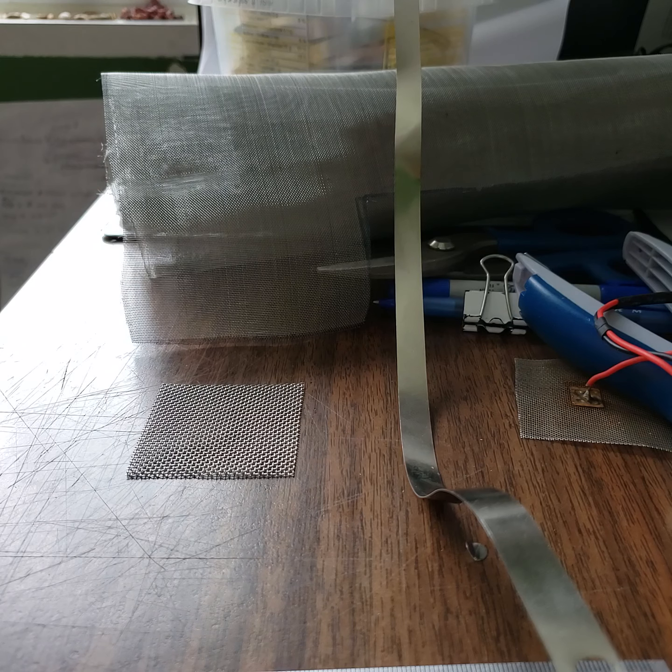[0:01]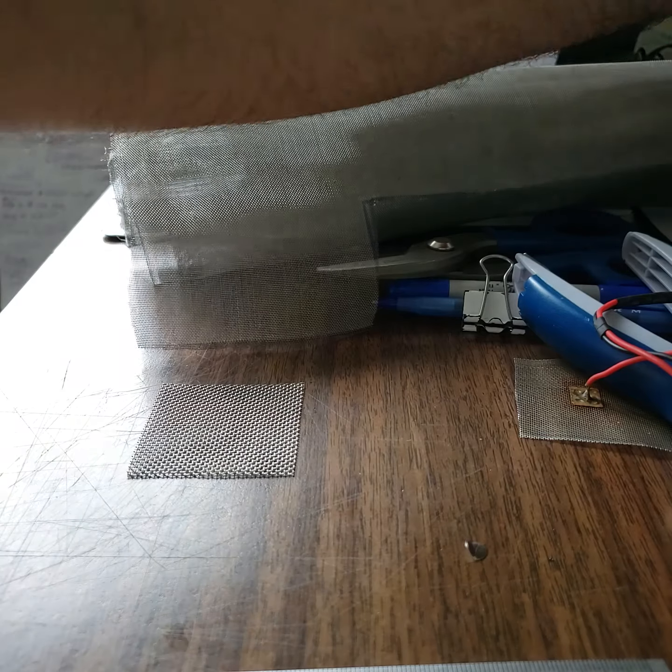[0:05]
Hey guys, today I will go through the steps for constructing electrodes for tDCS devices.
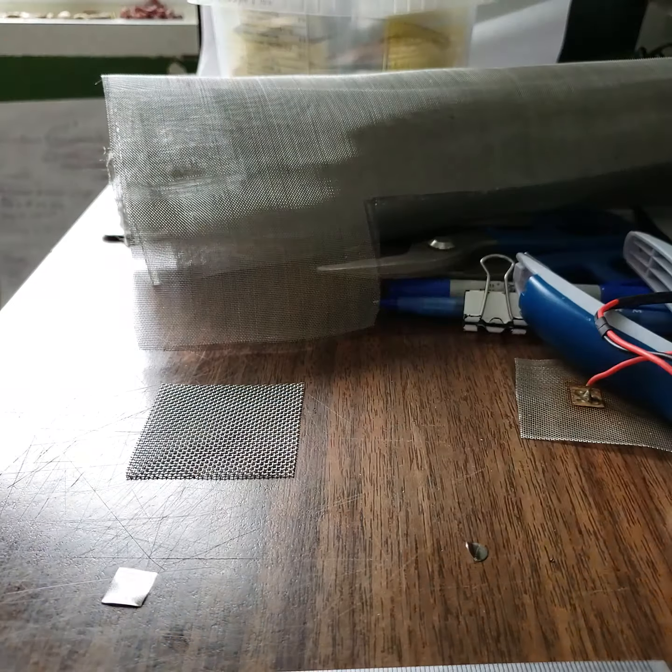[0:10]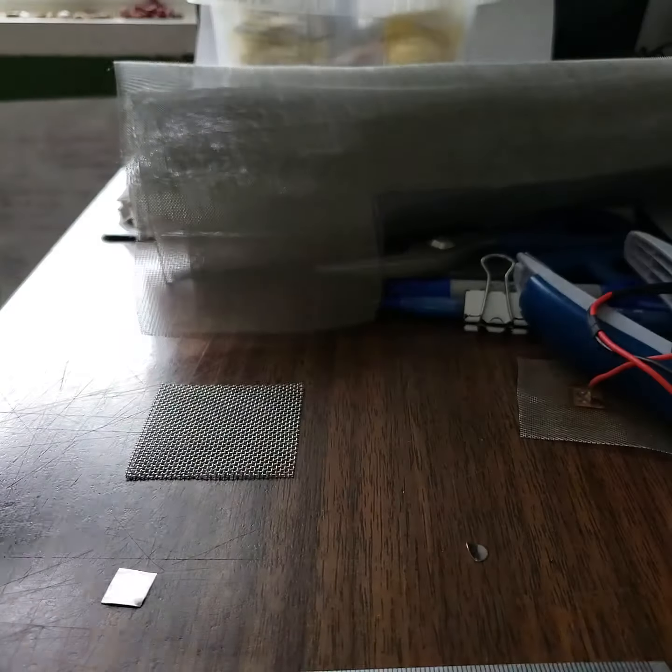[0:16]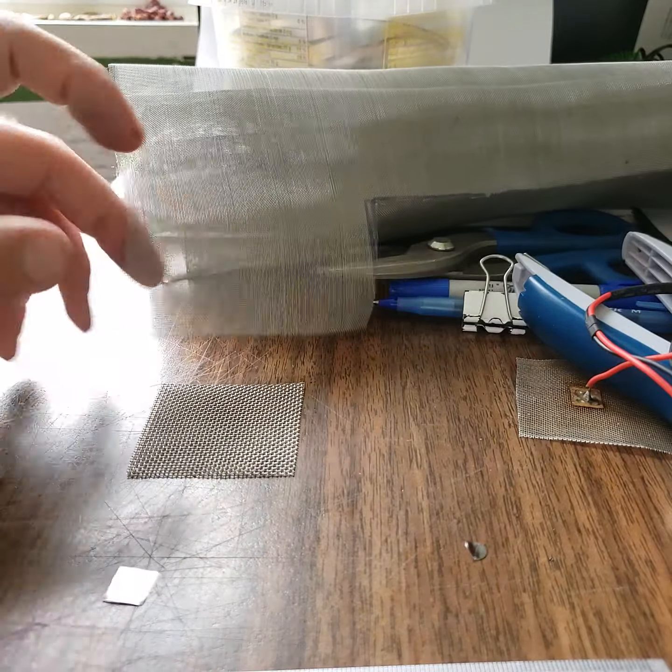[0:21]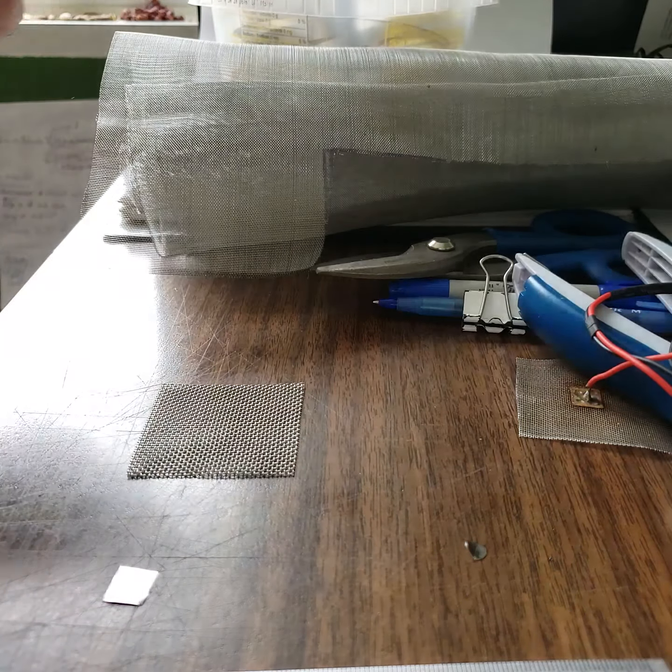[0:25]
So you should buy this sheet. It's the mesh 20. Previously I was buying 40, which is not really solid. It easily takes the form. I don't like it much. This one is more solid. It's 20. The other one is 40.
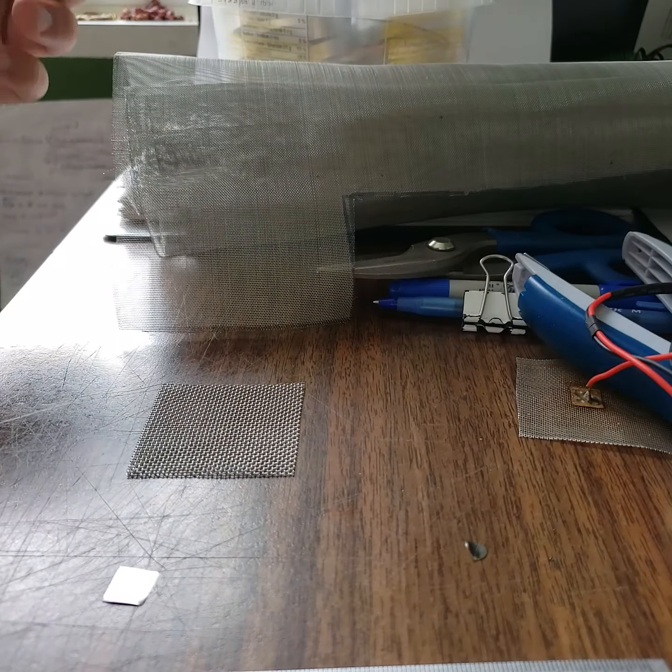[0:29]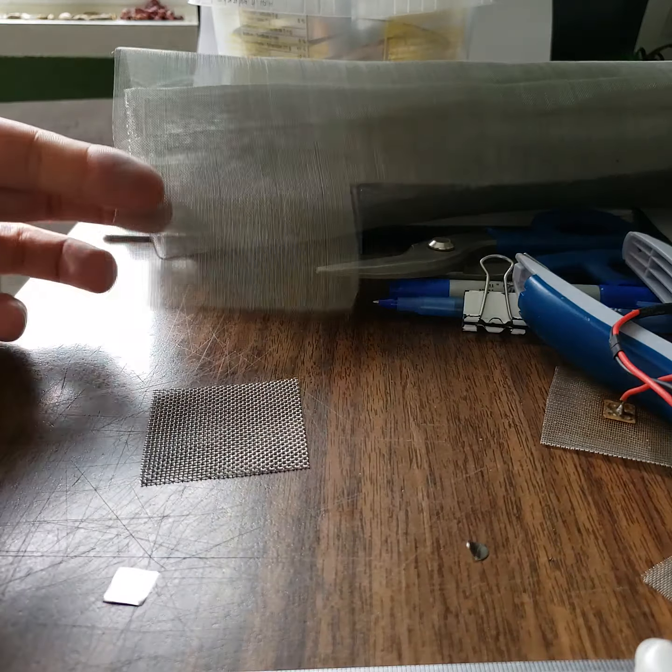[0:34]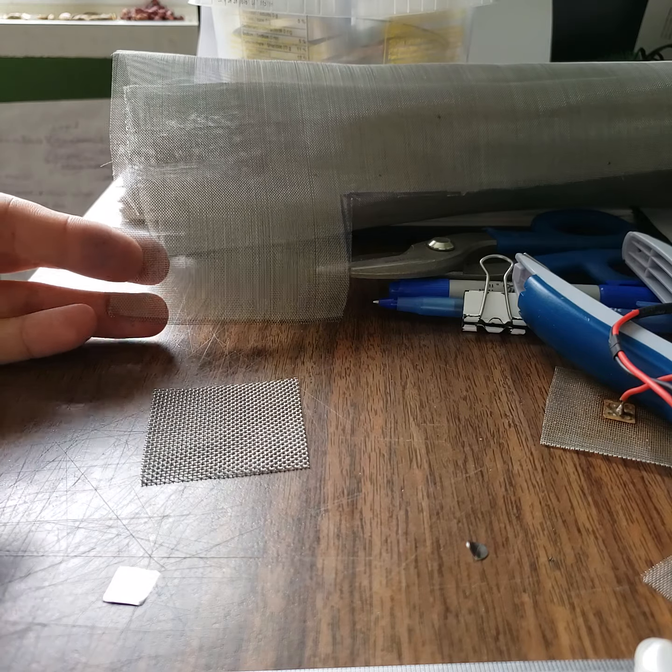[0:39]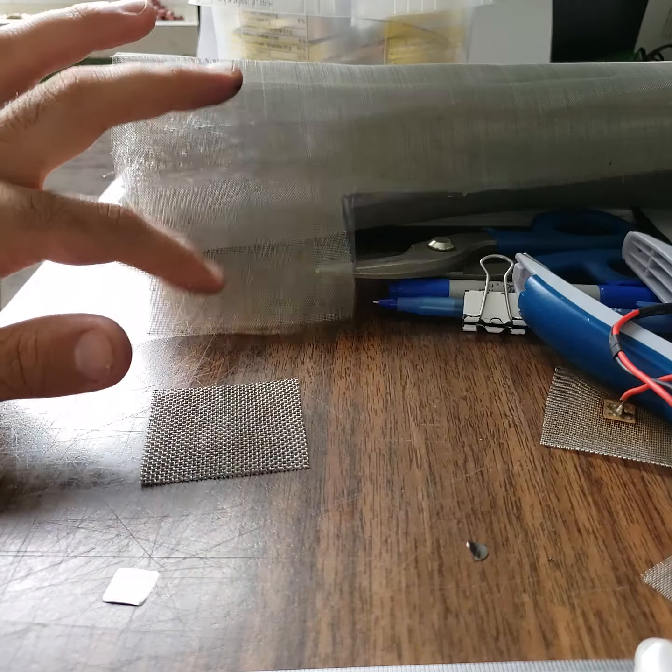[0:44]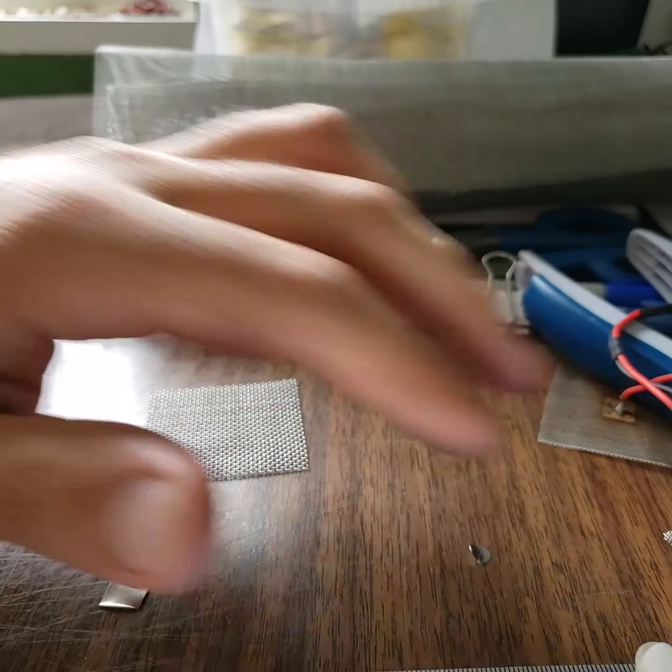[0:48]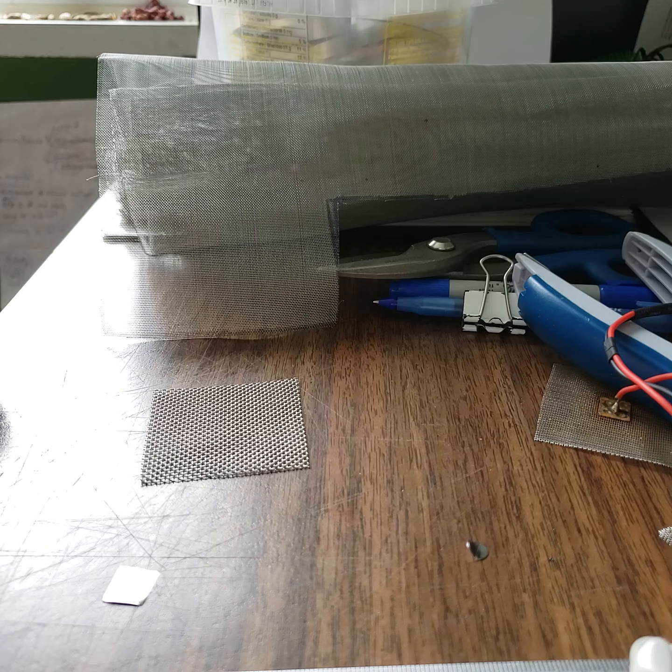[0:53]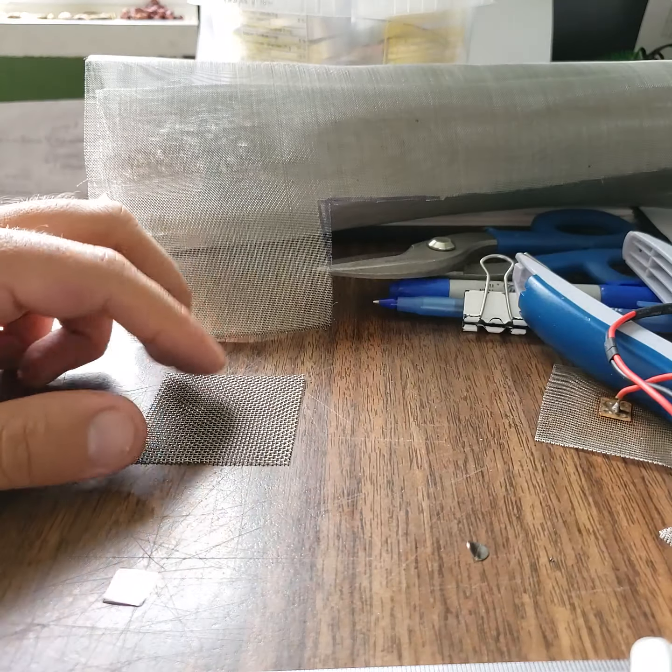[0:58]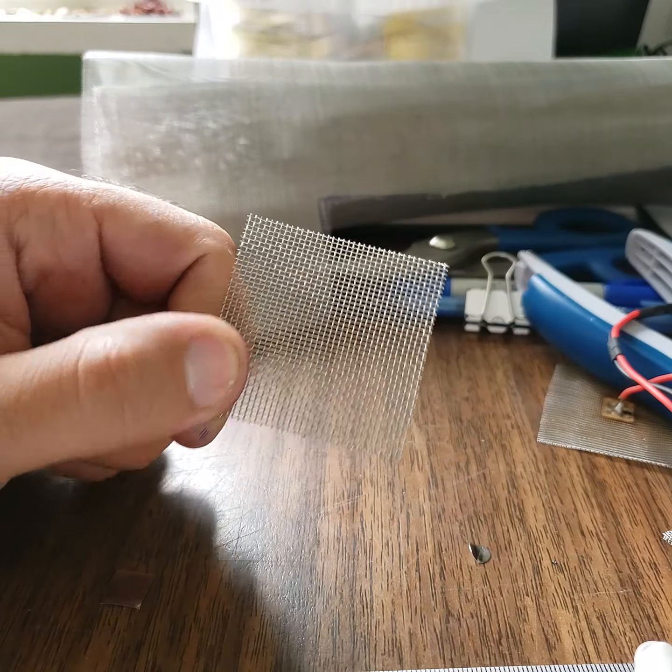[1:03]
The other thing I don't like about mesh 40 is it's not resistant against electric current. After using it for several weeks, the filter starts to melt, and it will lose some of its parts, so it won't pass the electric current evenly through the sponge. So I'm going to try the 20 mesh today.
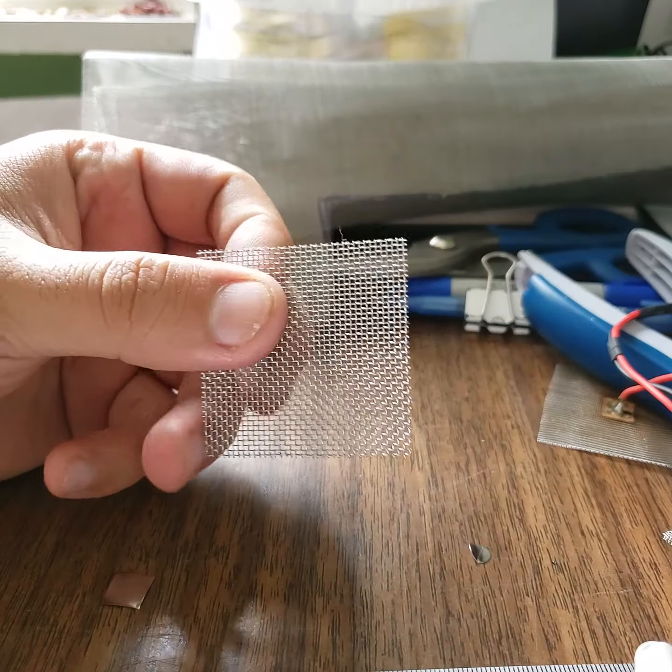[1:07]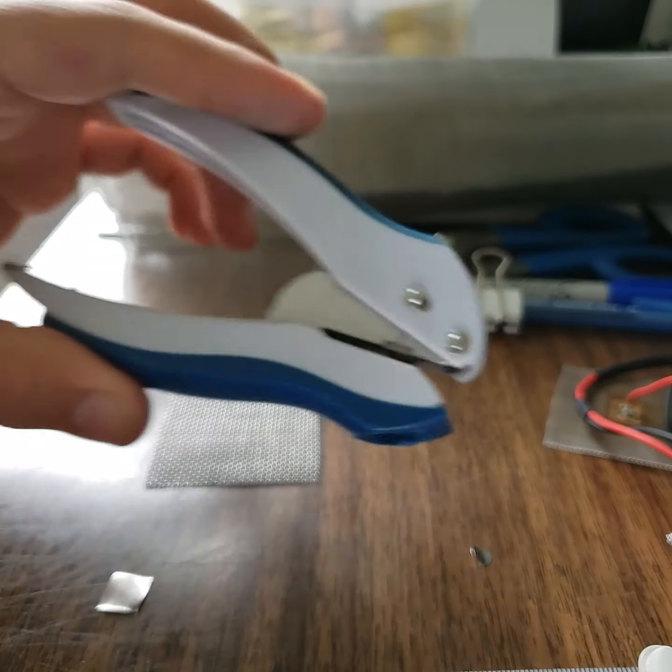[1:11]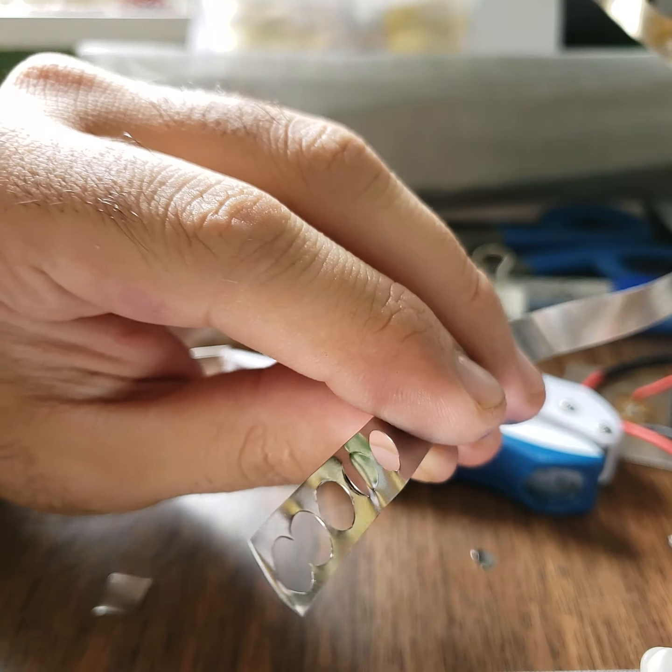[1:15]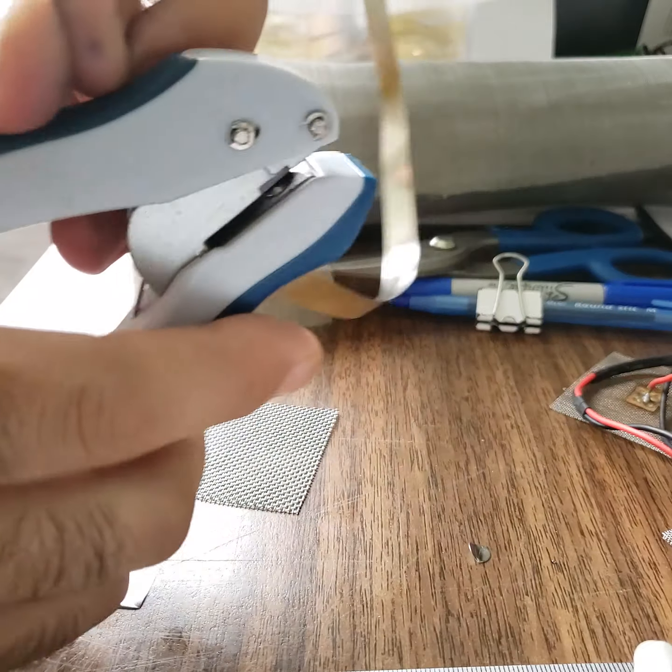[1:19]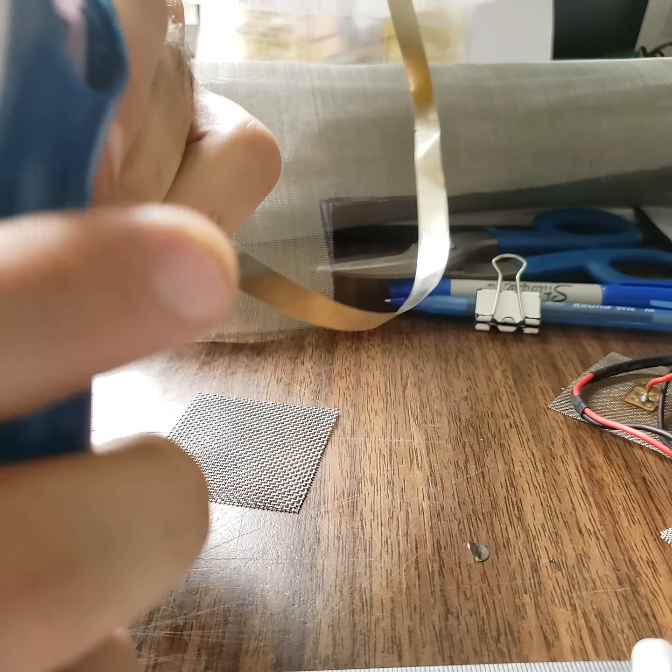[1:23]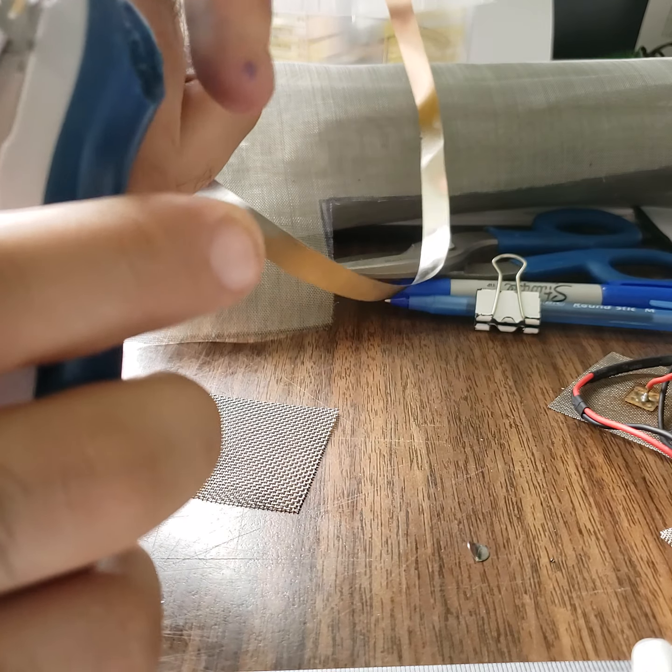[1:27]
So you just cut it with size 5 by 5. After that you can use the punch and the nickel strip. You can punch it. So I already punched one. I need one more here.
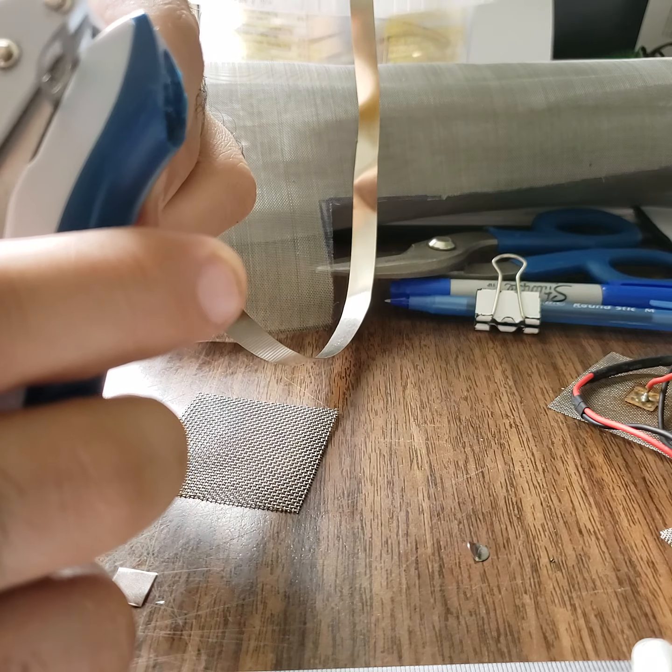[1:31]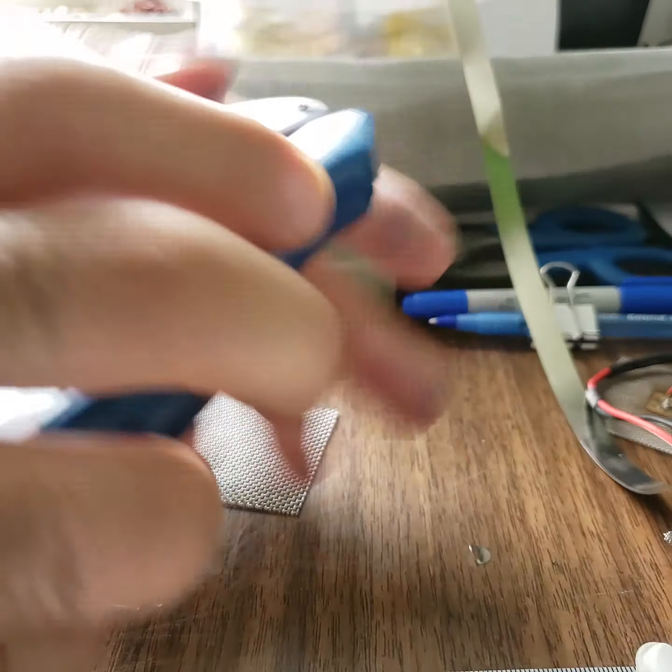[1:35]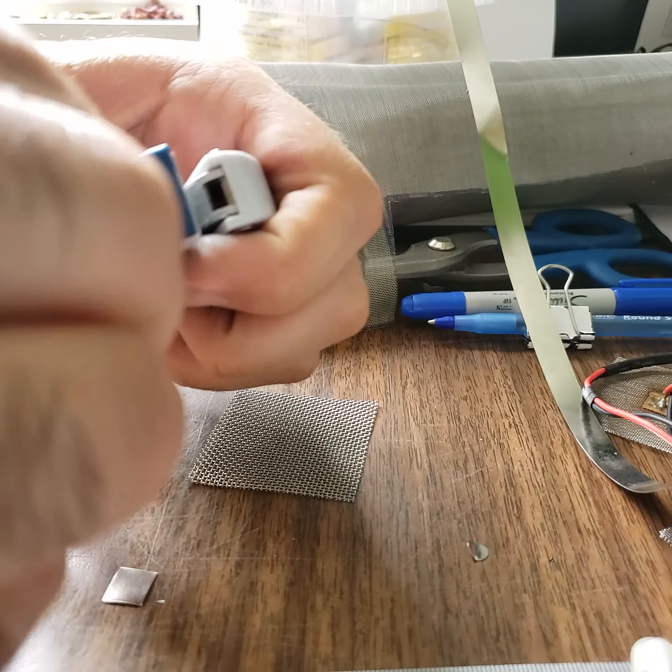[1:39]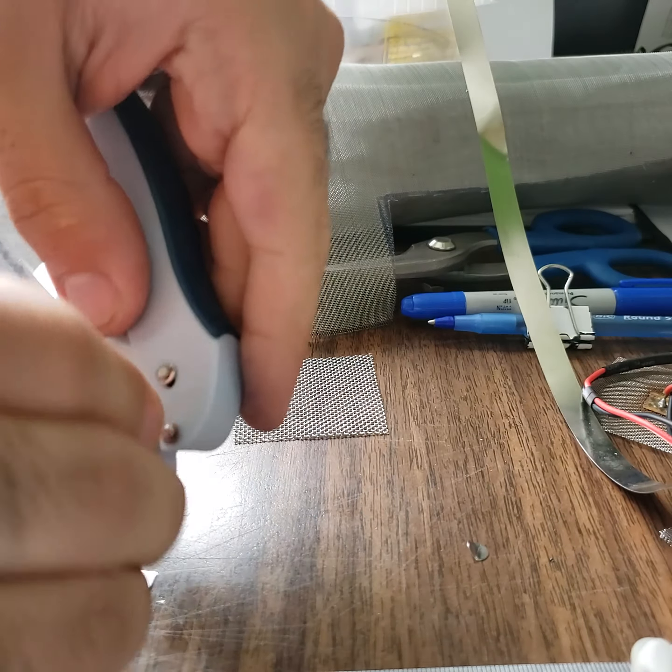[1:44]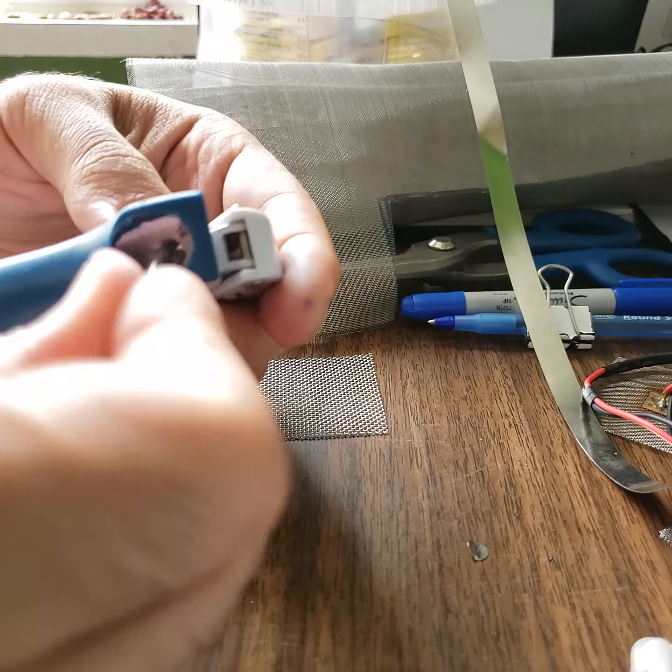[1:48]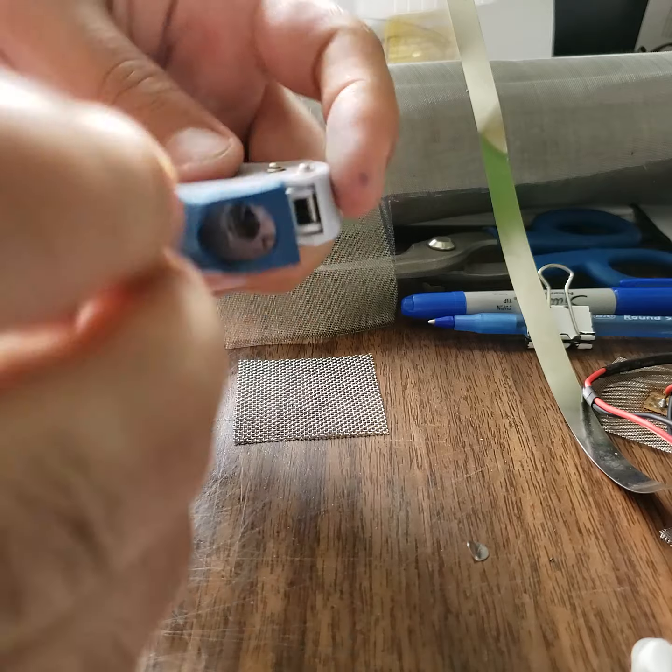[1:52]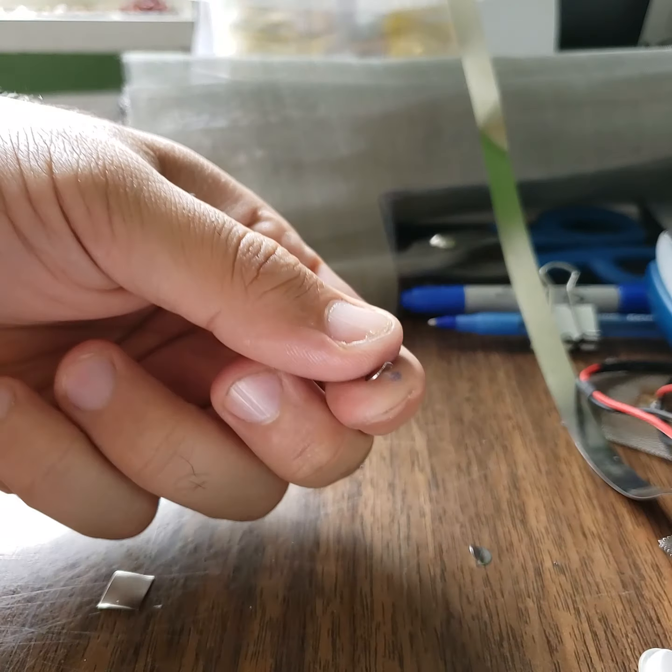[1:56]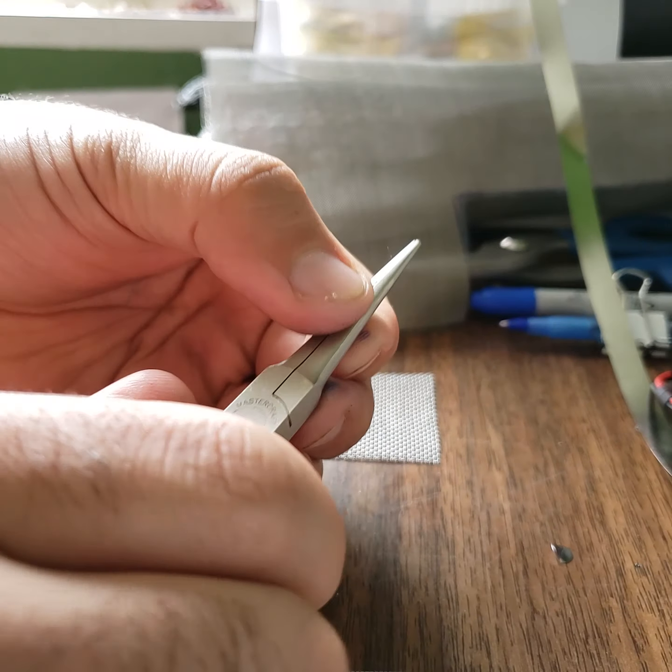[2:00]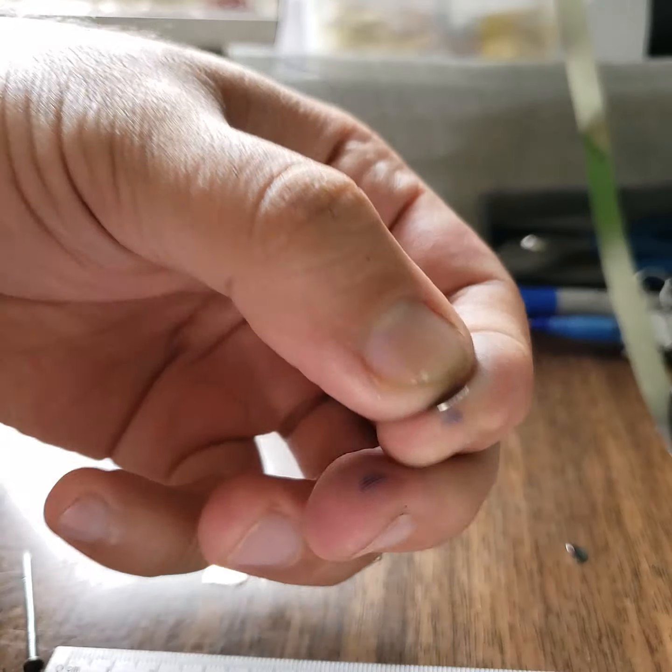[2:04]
Okay, I should take it off. It's stuck inside. Okay, so now you have two pieces. You can flatten this nickel sheet.
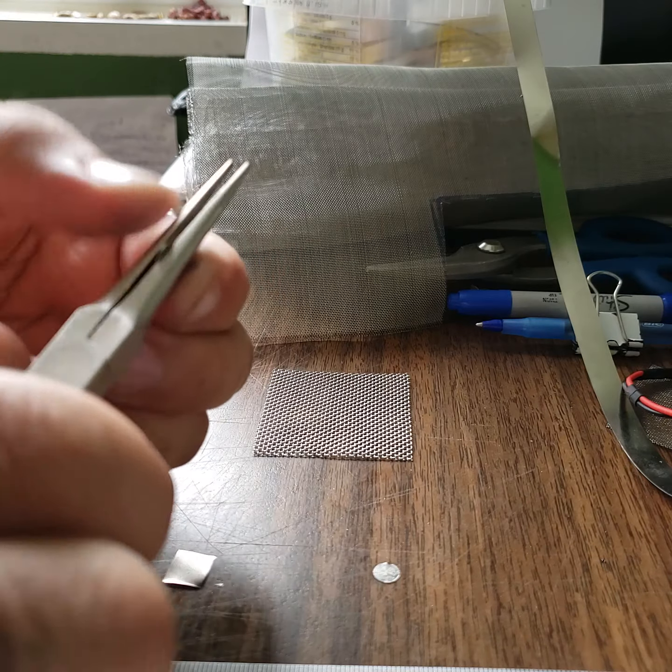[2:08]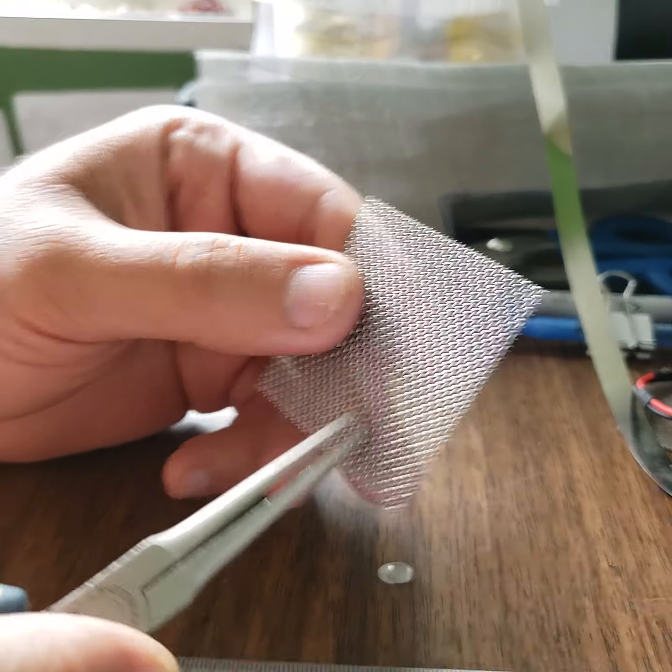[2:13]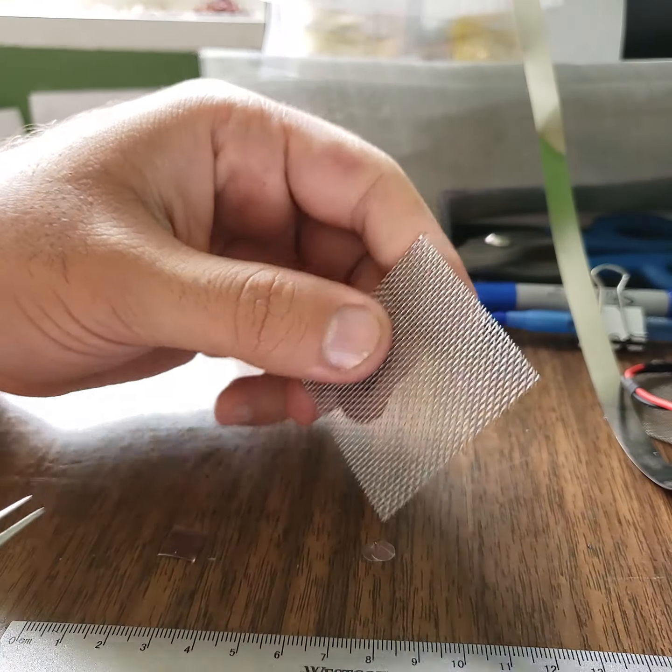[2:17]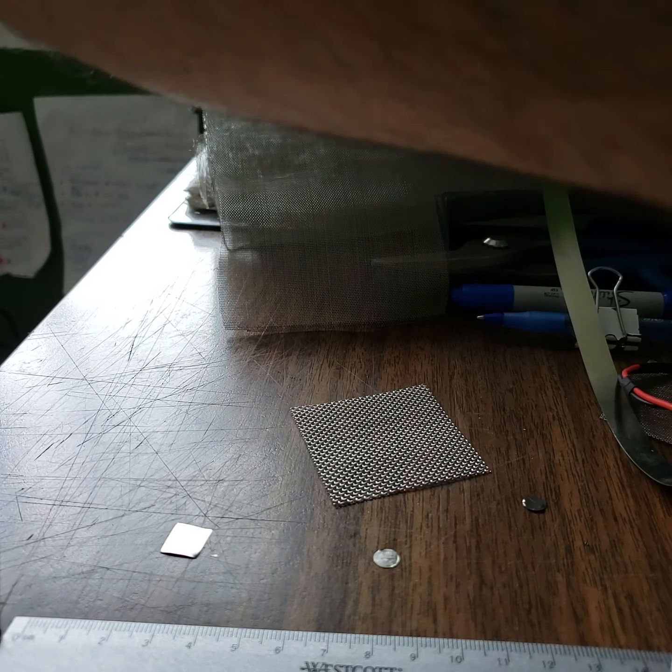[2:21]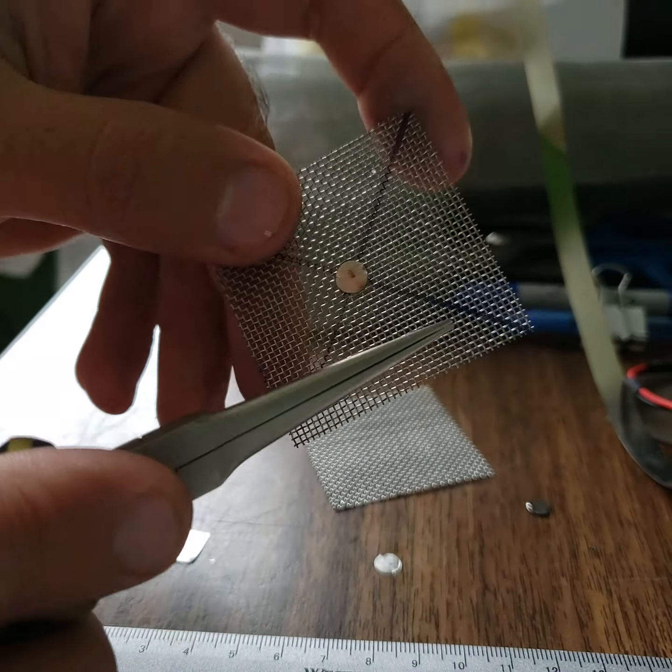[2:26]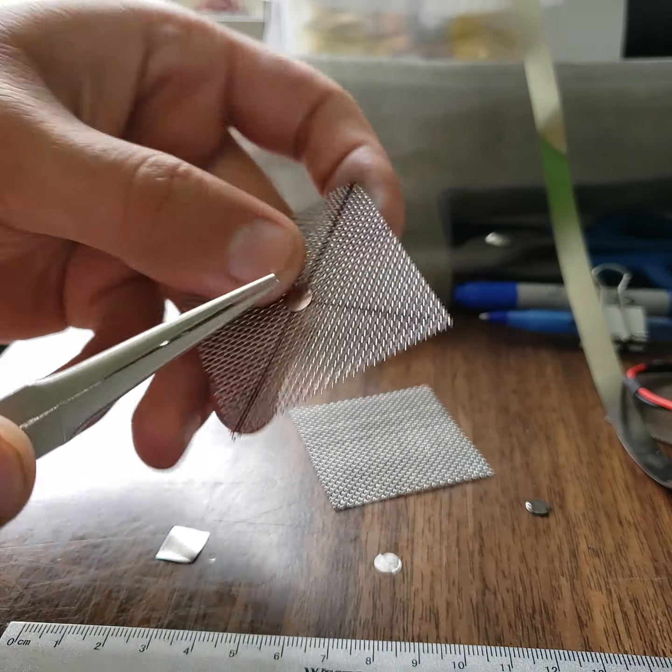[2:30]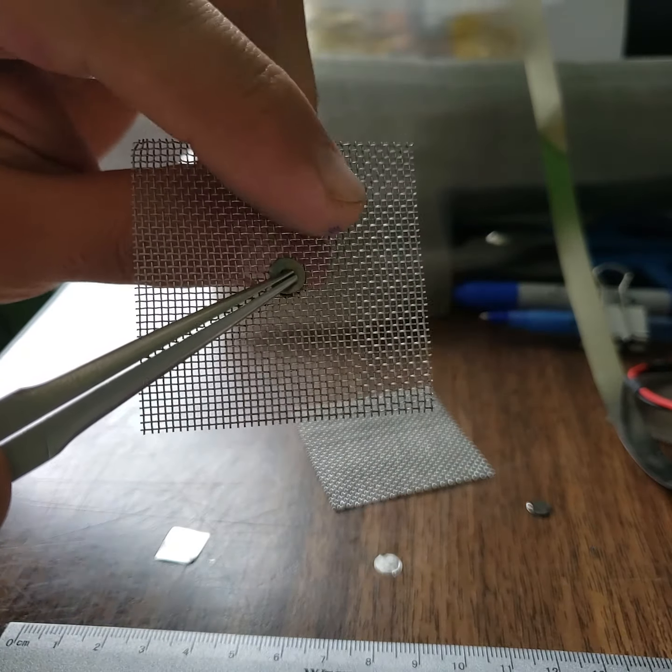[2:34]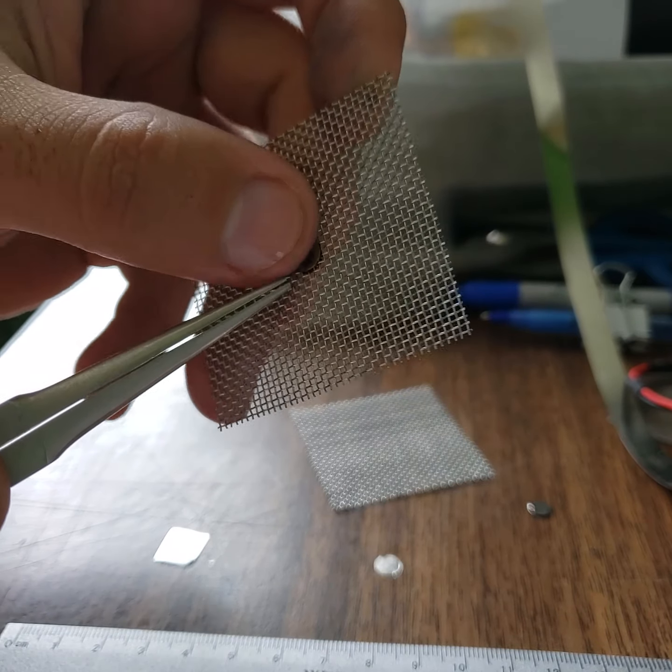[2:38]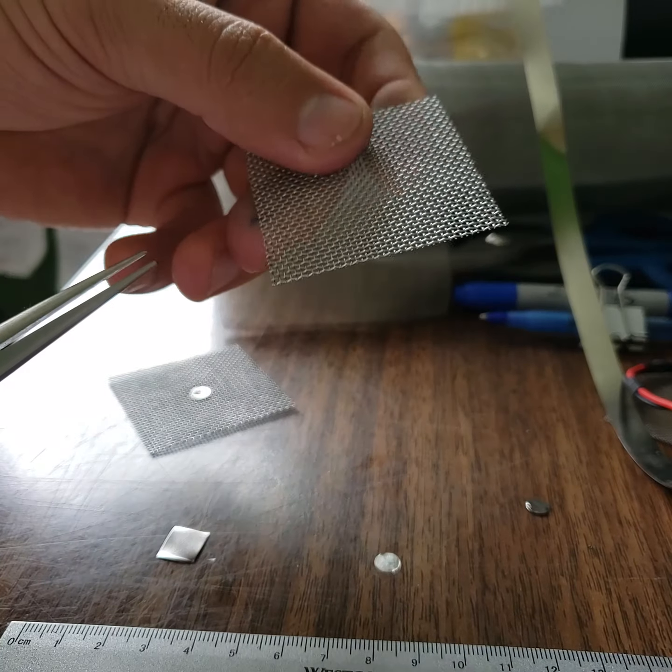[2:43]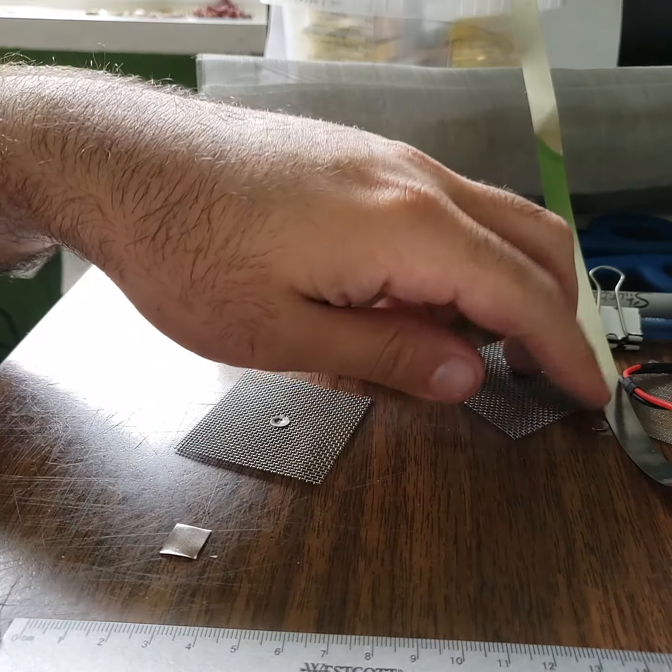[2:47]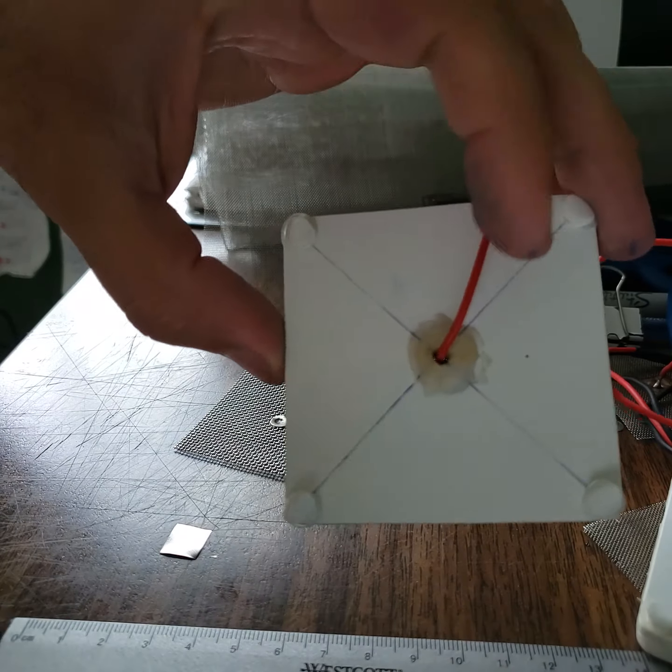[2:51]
Next step is you have to draw the diagonal of this square, and then find the center for welding these two. So I have already done one here. I draw the diagonal, I find the center, and I put one of these sheets on one side, the other on the opposite side, and only from one side I will make a spot weld. I'm going to do this one later on.
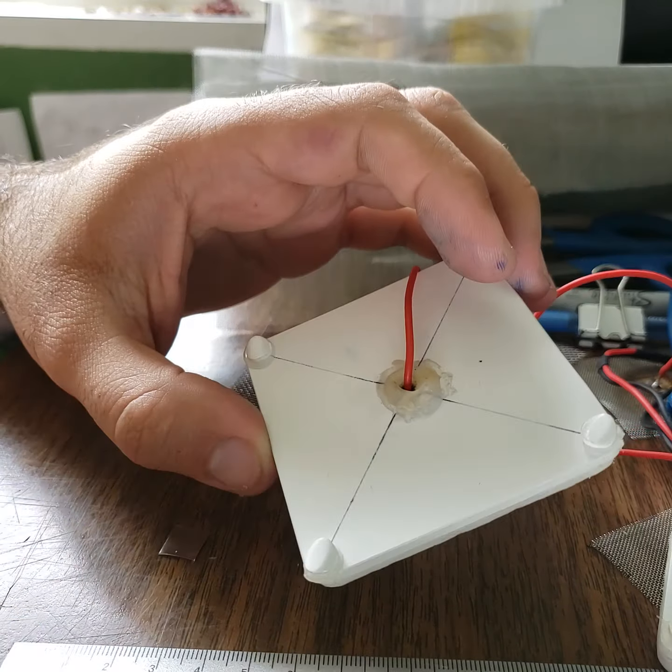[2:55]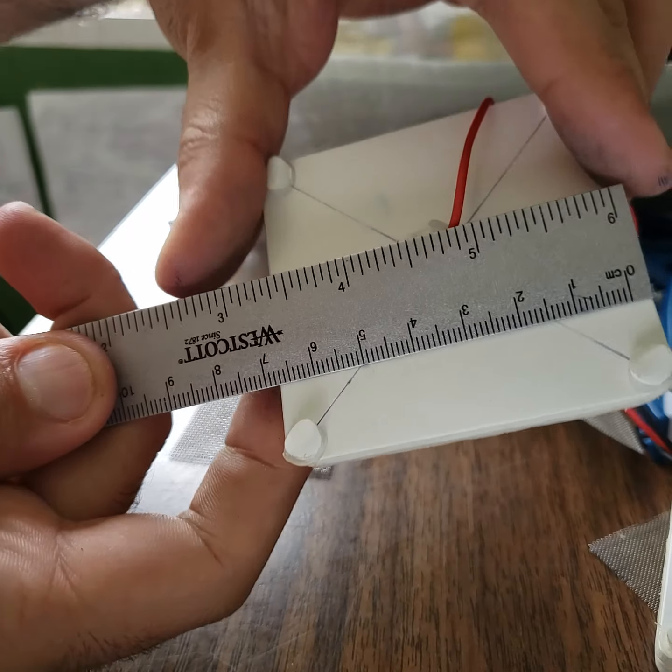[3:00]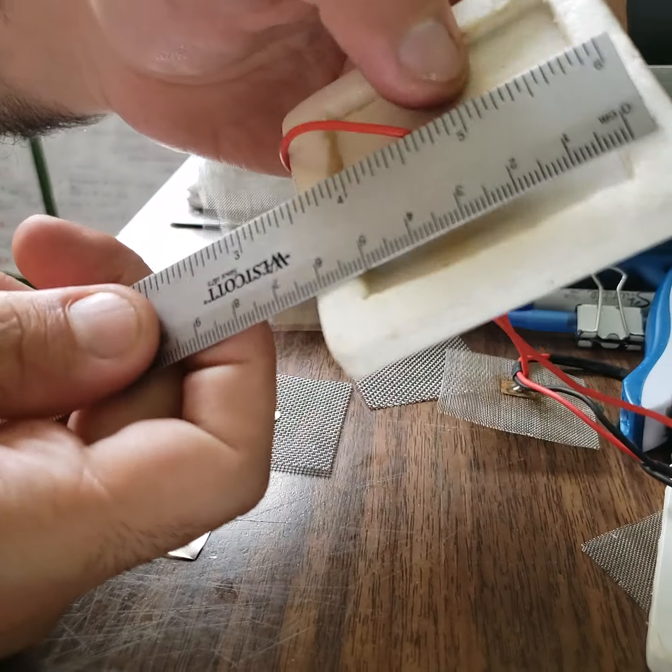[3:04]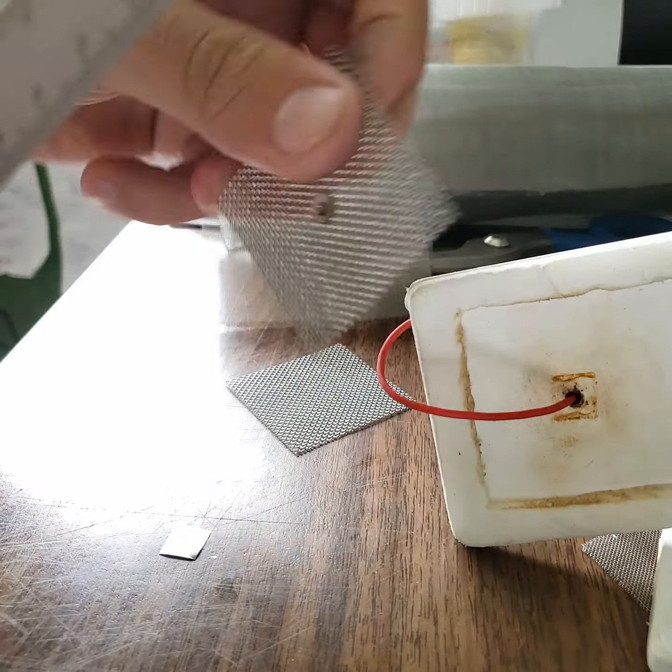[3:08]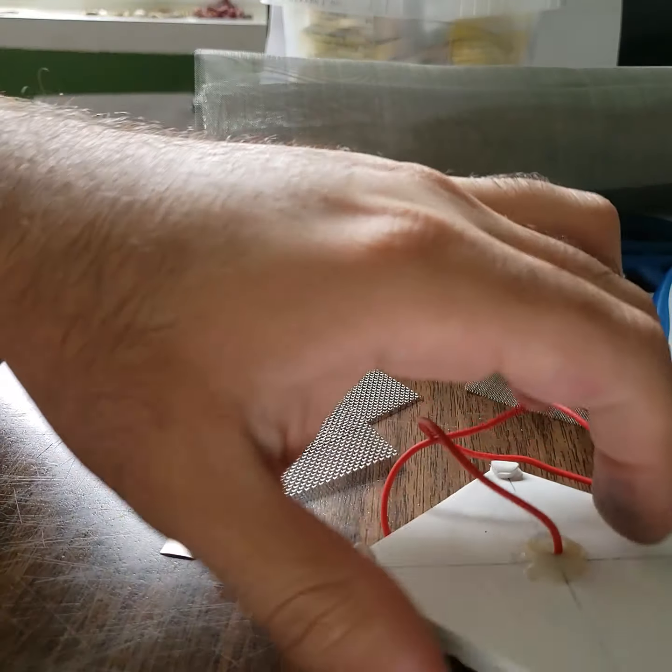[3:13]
So the next thing you should do is cut these cardboards. This is 7 centimeter by 7 centimeter. So it's 7 by 7, and inside is 5 by 5. You can choose the inside size a little bit smaller so it can easily fit.
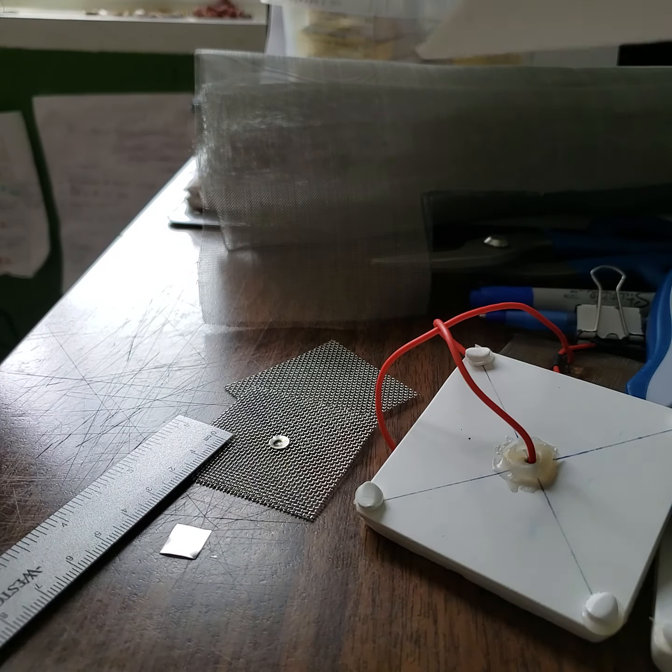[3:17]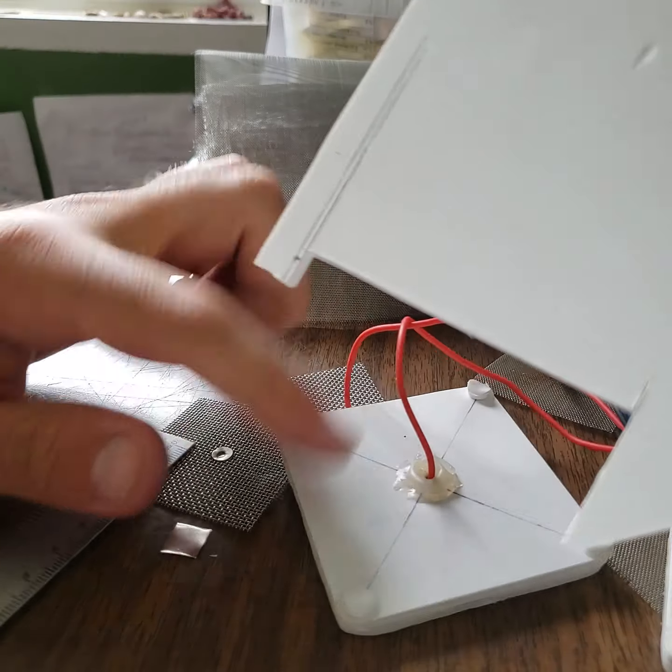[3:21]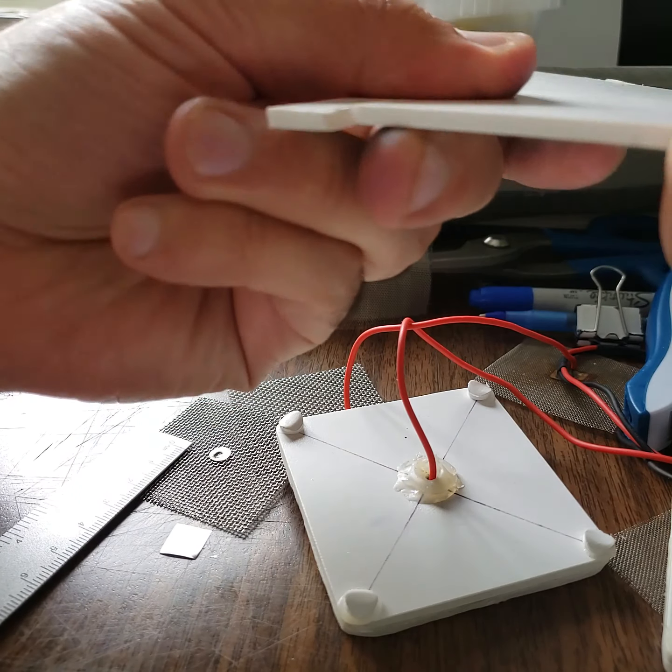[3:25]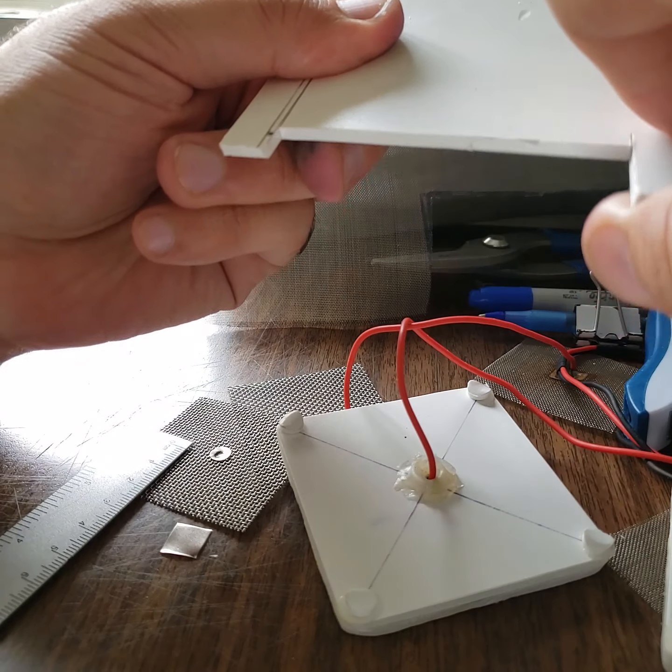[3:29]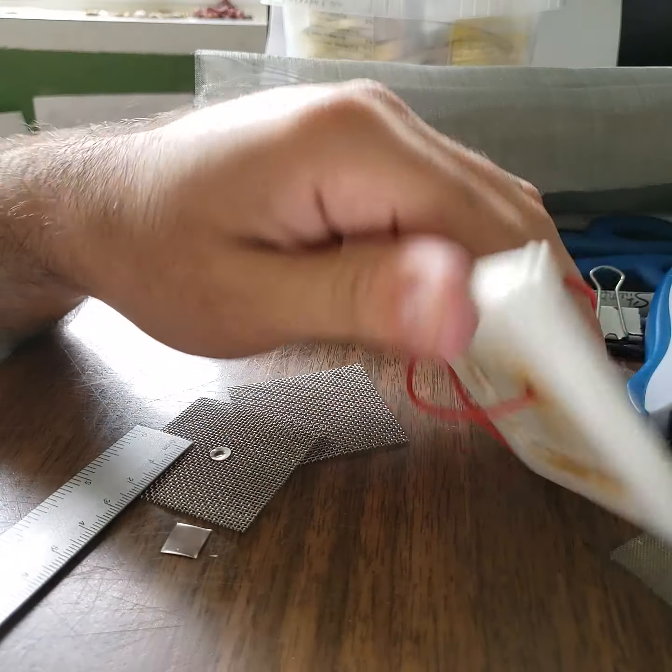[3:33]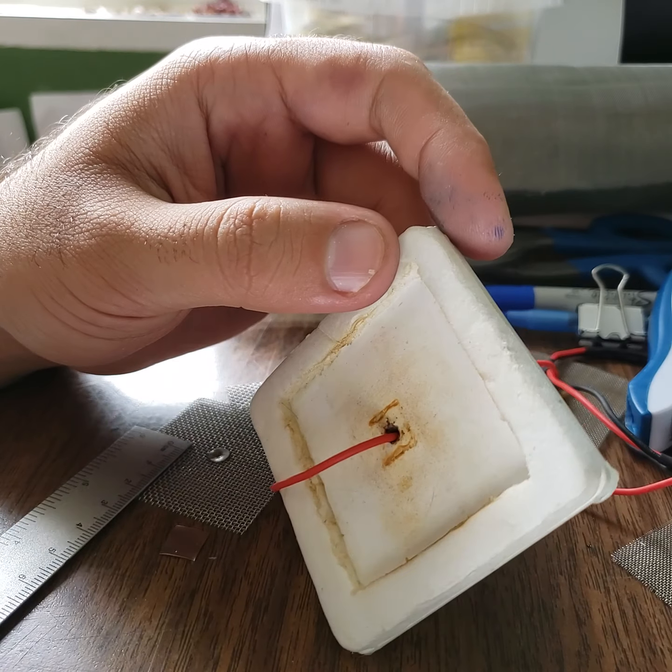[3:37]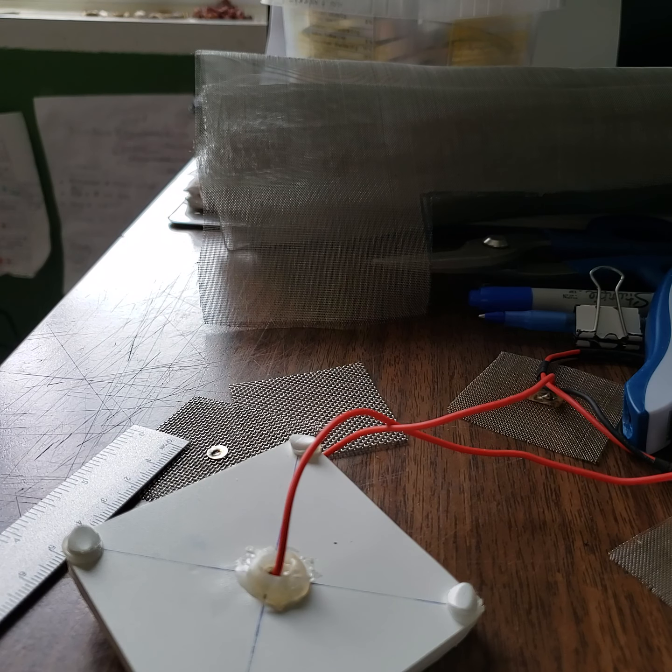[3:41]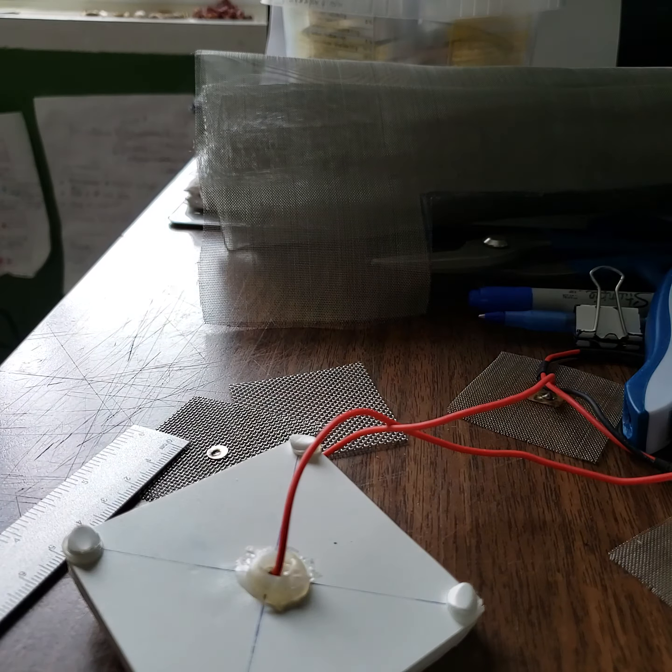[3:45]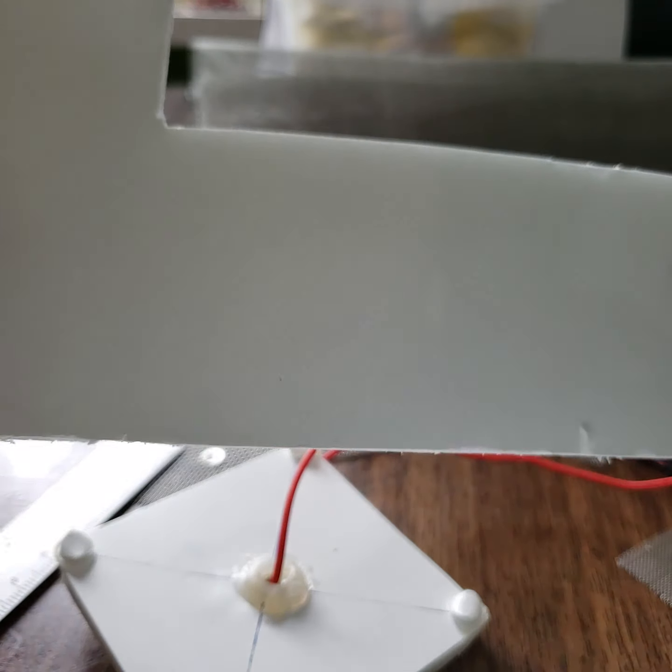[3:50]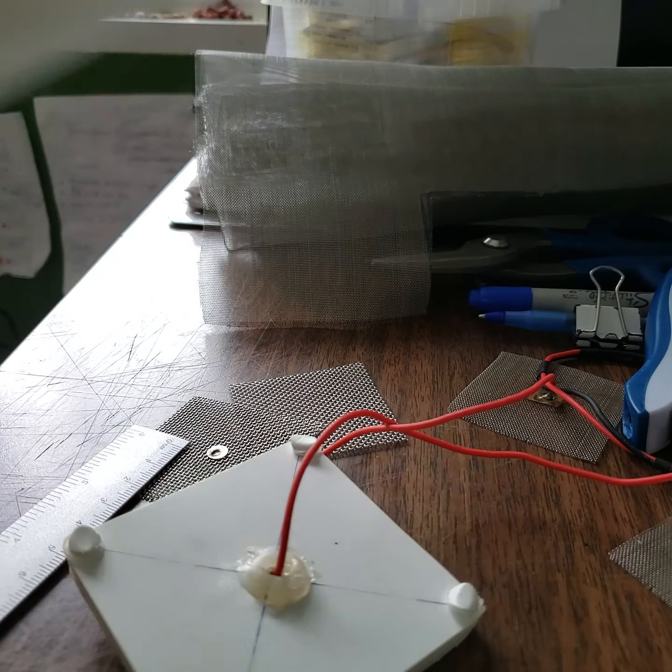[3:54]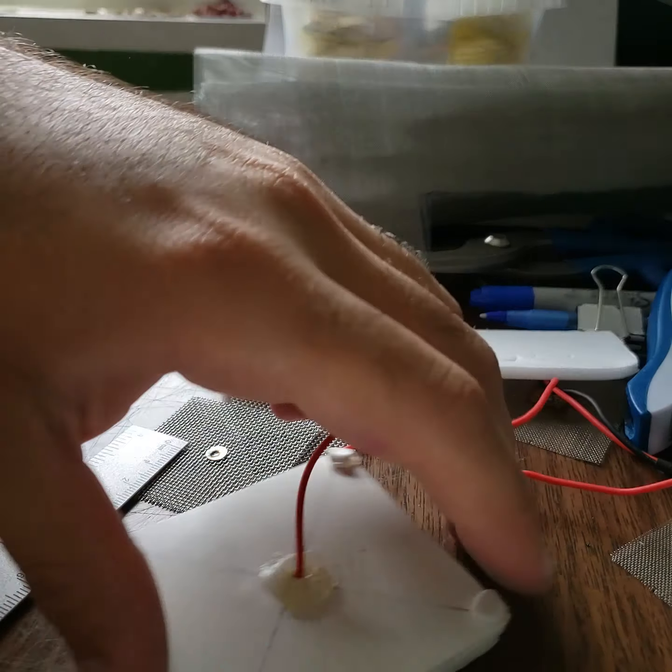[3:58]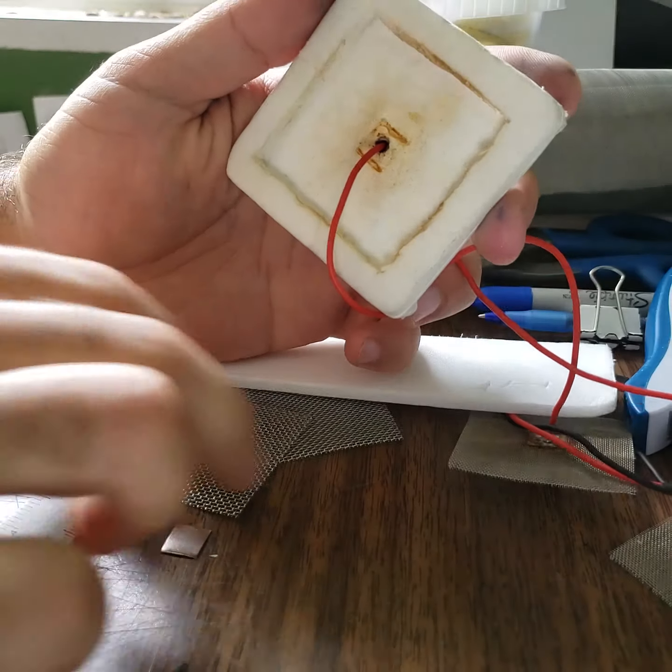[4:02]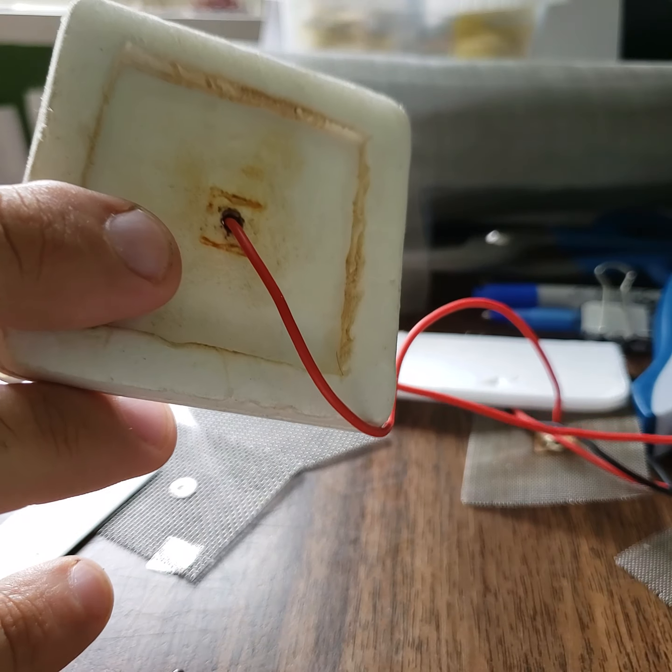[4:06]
For the back part, I am using this material, which is very solid and a little bit difficult to break. For the opposite side, which touches the skin, I use a different cardboard. That one you can find at Dollarama. It comes in sheets like this. Then there is a layer, you can just take it off. So you can make this part to hold the electrode.
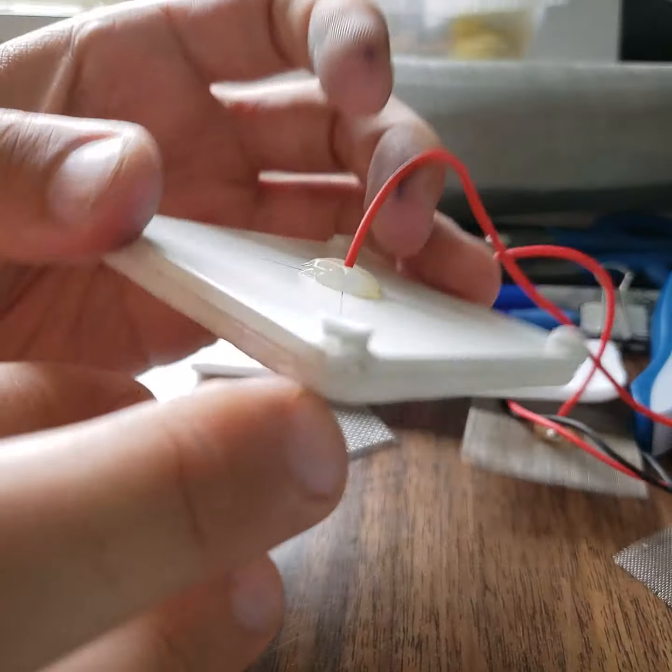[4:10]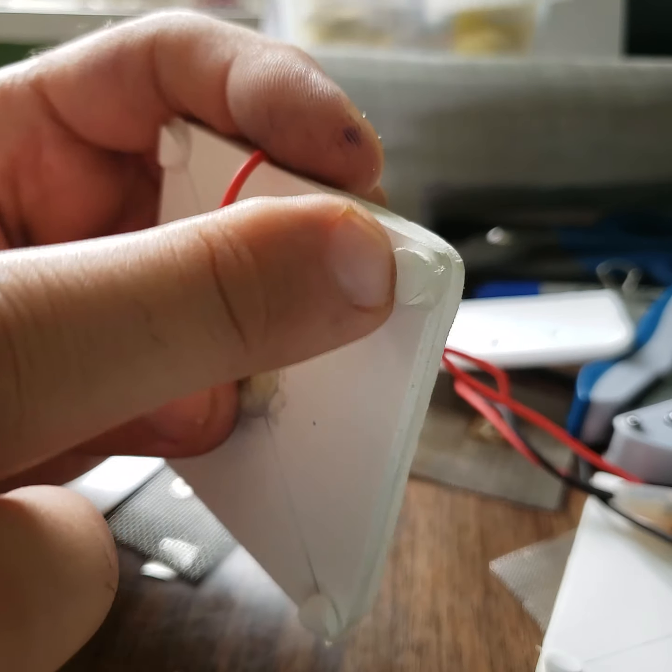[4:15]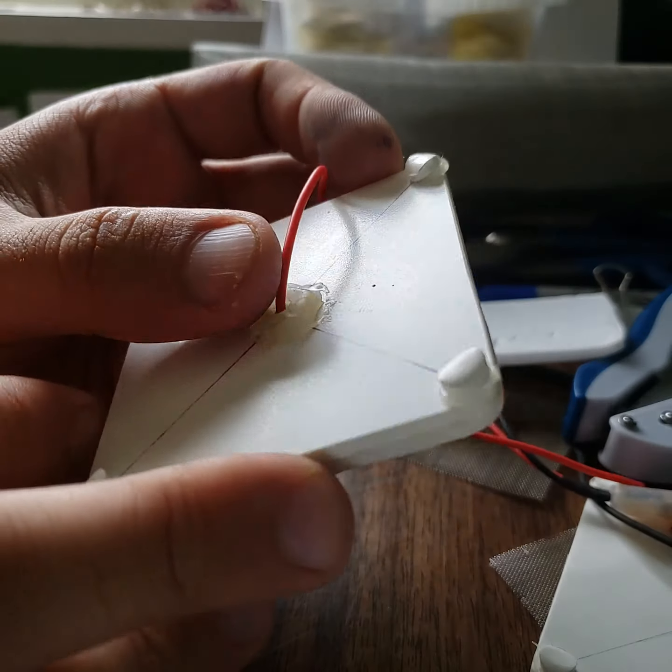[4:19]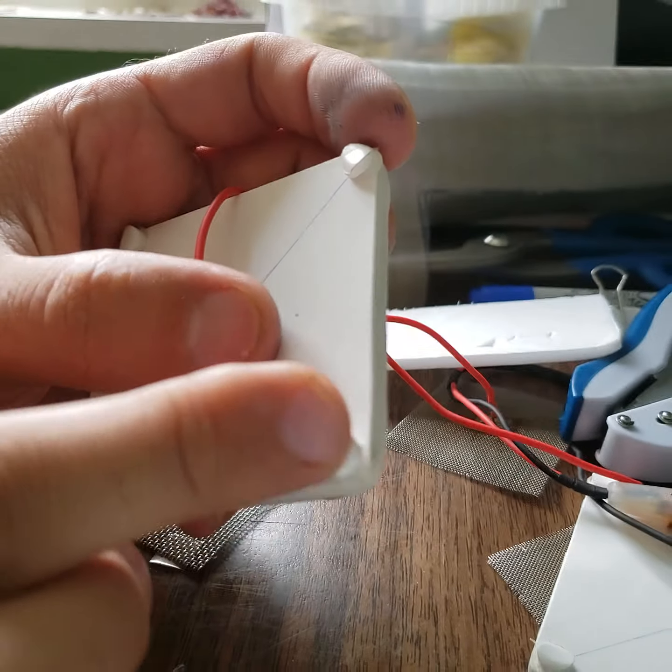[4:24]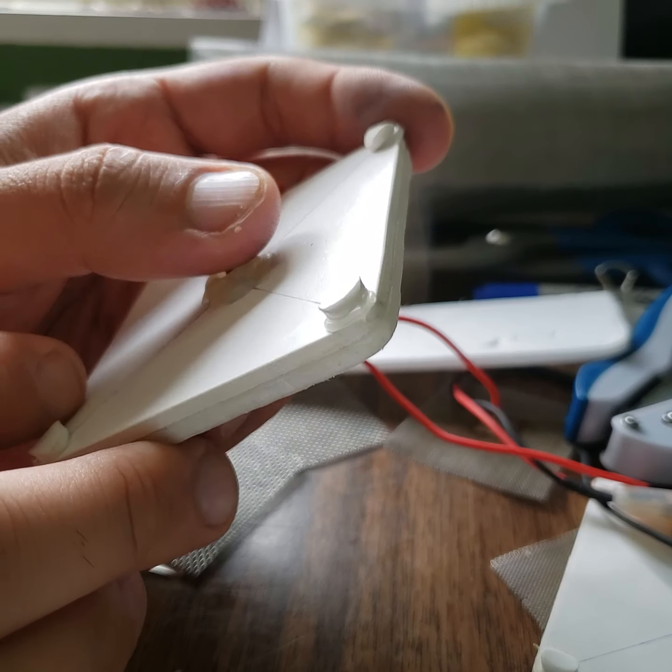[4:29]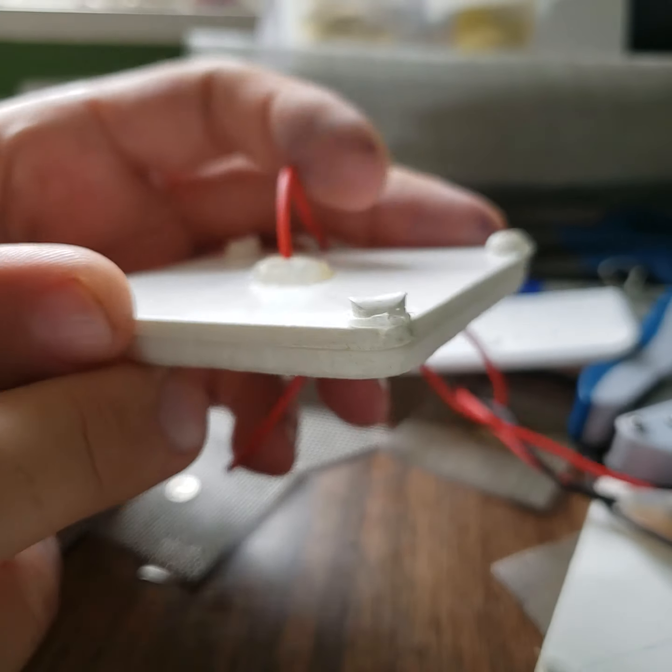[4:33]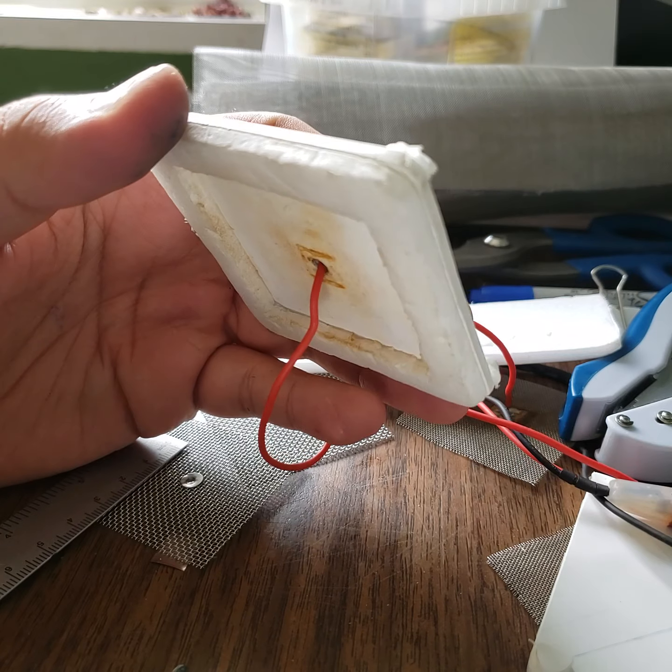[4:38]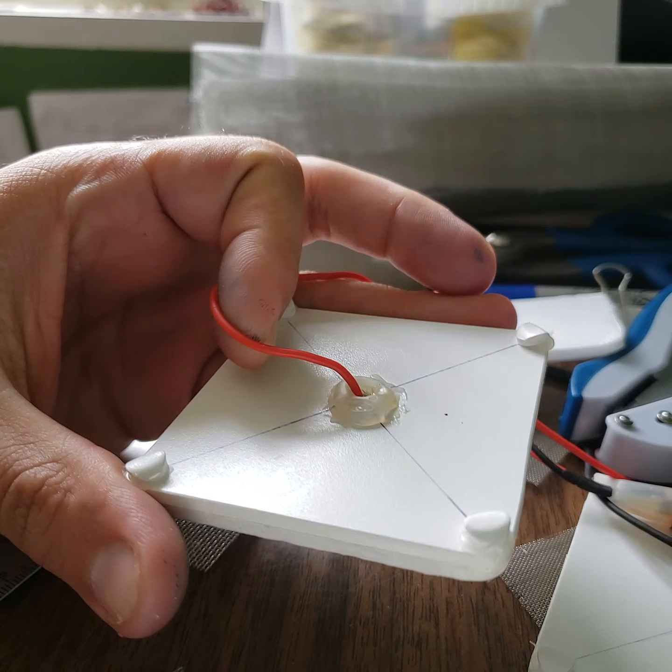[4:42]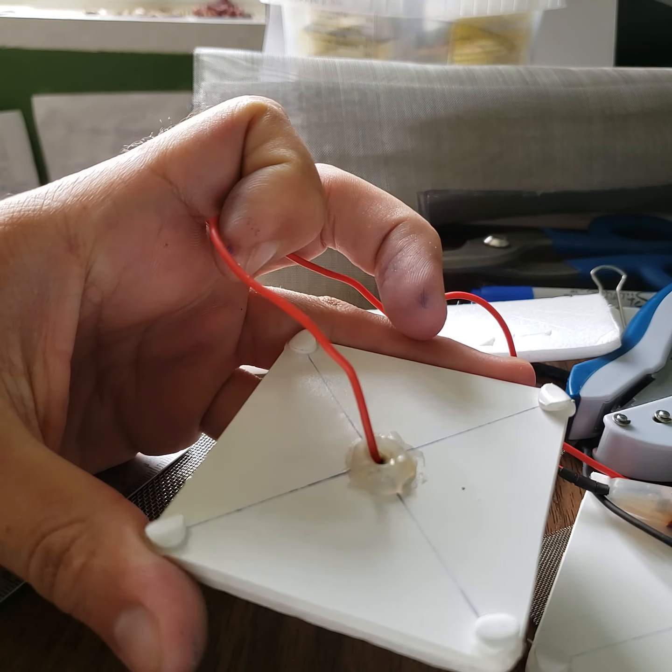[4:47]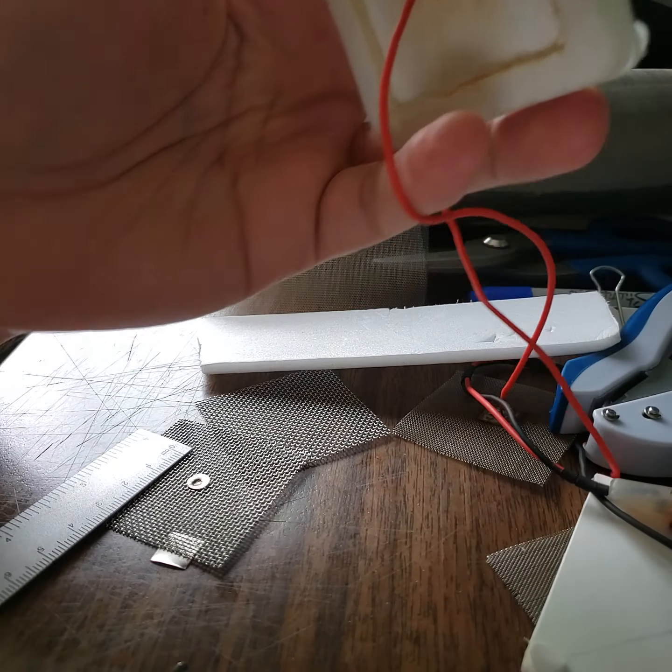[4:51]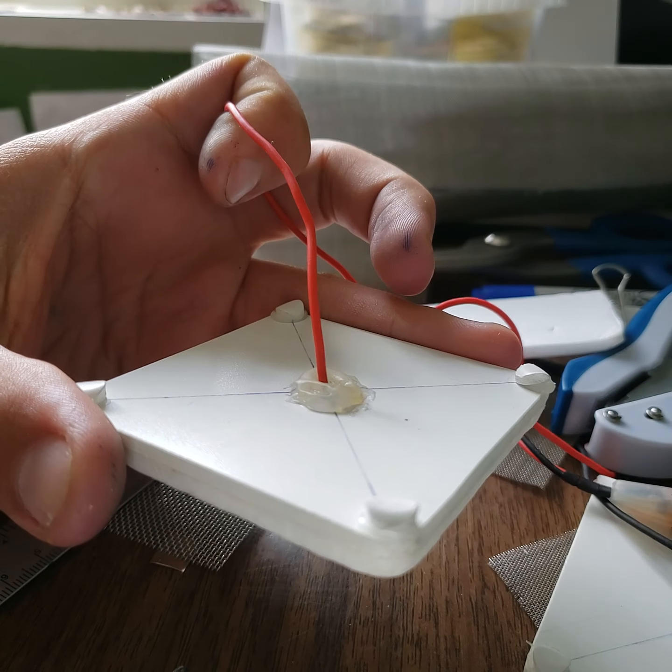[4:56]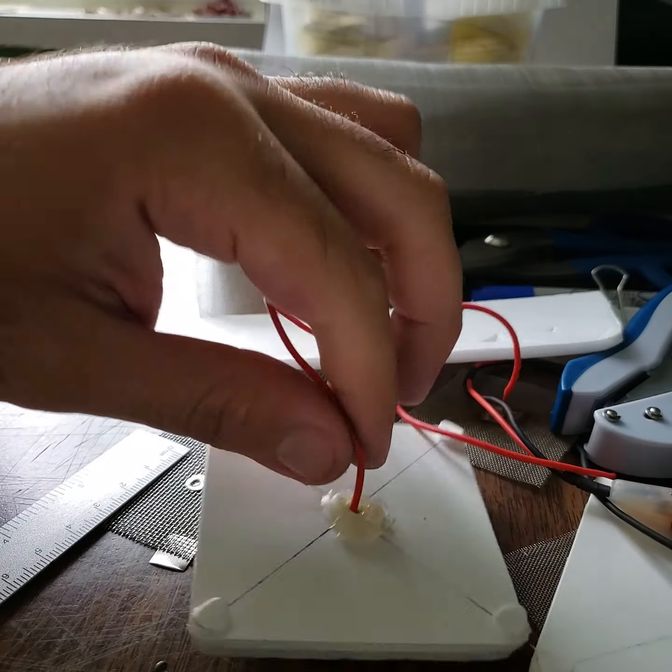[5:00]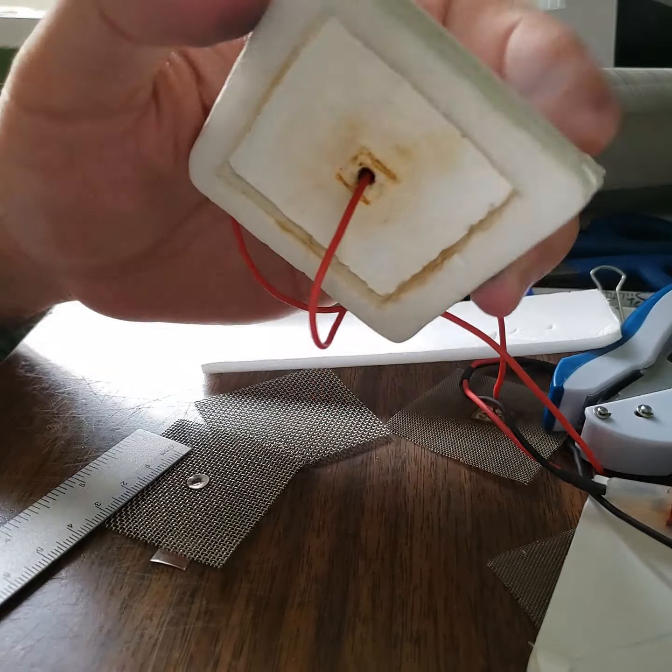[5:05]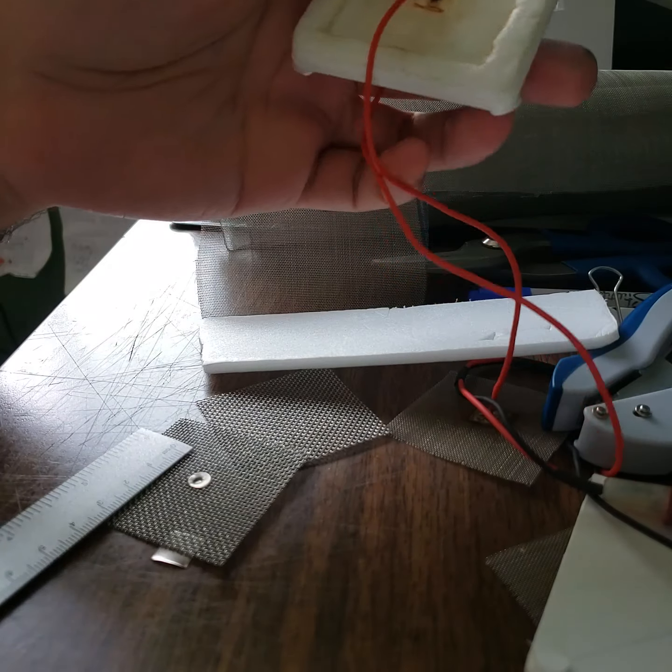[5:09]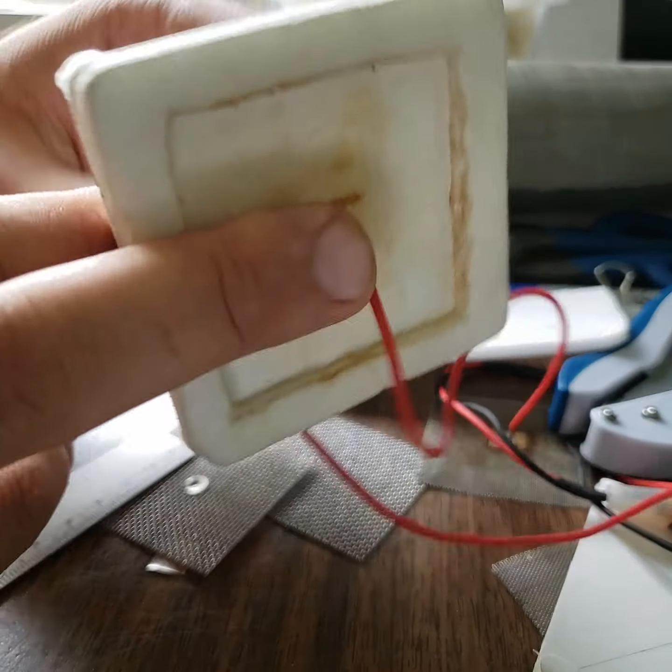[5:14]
Now next, I also punch these pieces. This one is good for the headband, when you use the headband to keep the electrodes on your head. This doesn't let the electrode fall off. What is annoying is if during a tDCS session, for any reason, the electrode loses contact with the skin, you will see an unpleasant flash in your eyesight. I had that bad experience. It's not really hurtful, but it's also not pleasing. So that's why I put this one, to make sure that for no reason the electrode loses contact with my skin, so it's always protected. Then in the center you make a hole to pass the wire.
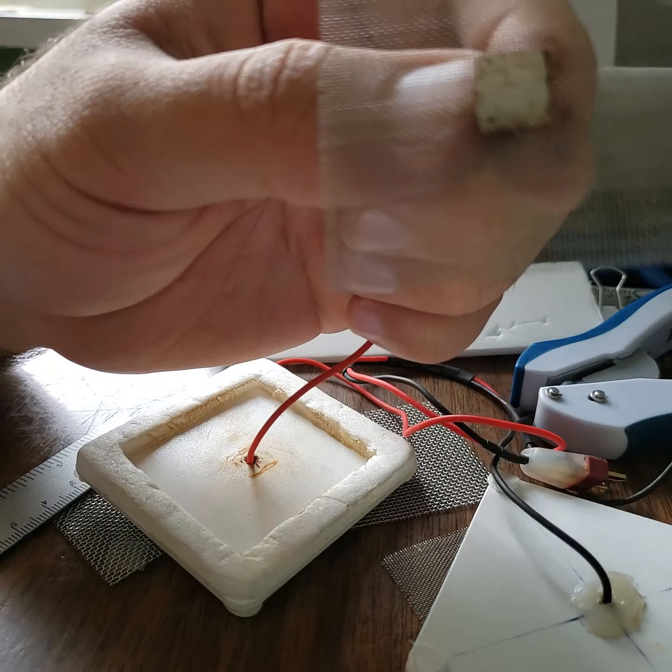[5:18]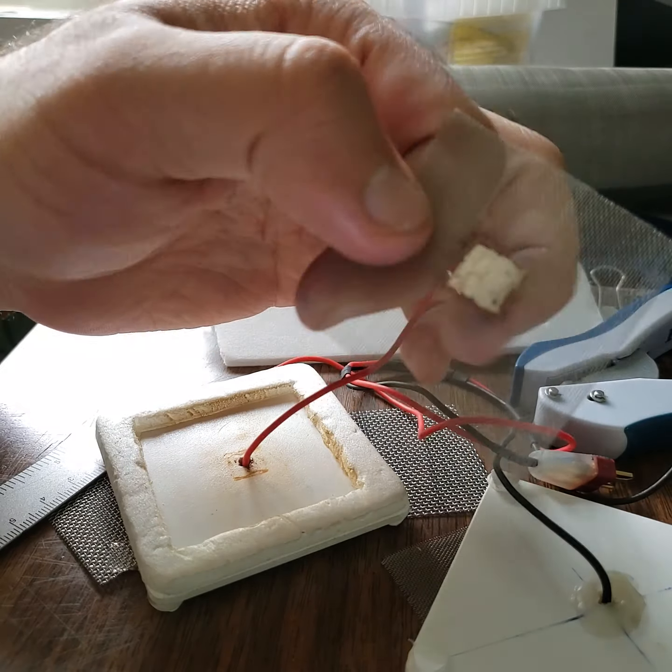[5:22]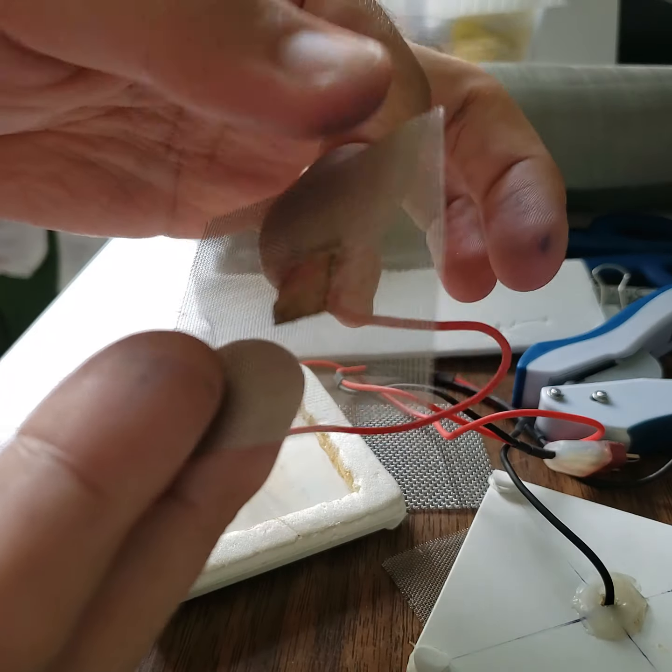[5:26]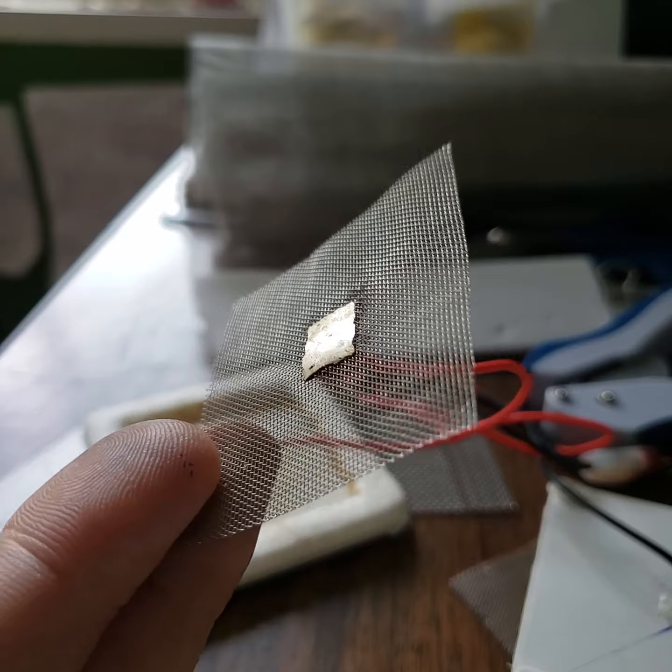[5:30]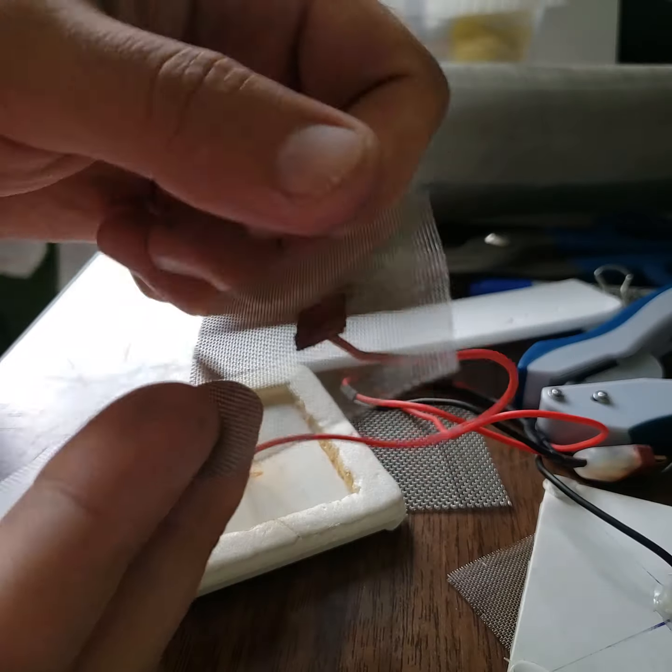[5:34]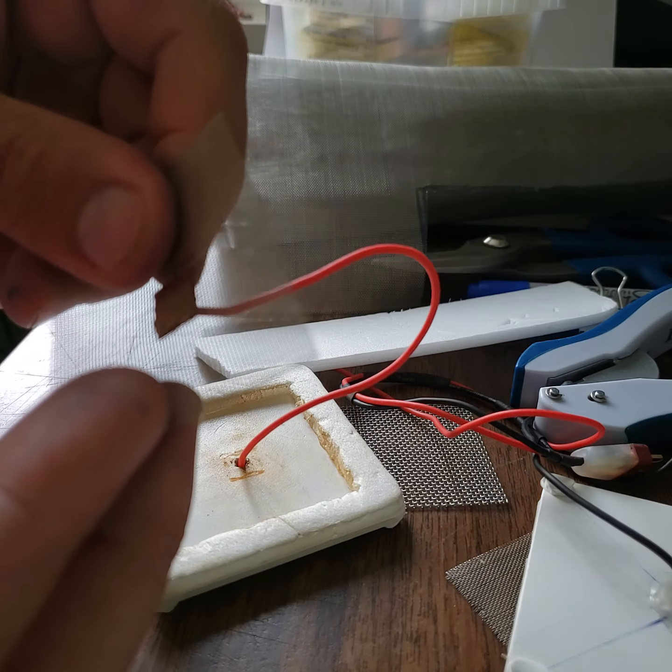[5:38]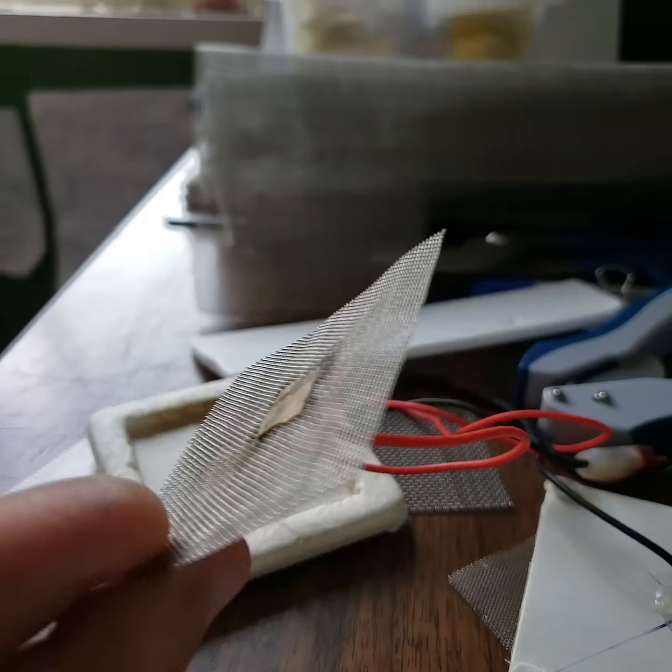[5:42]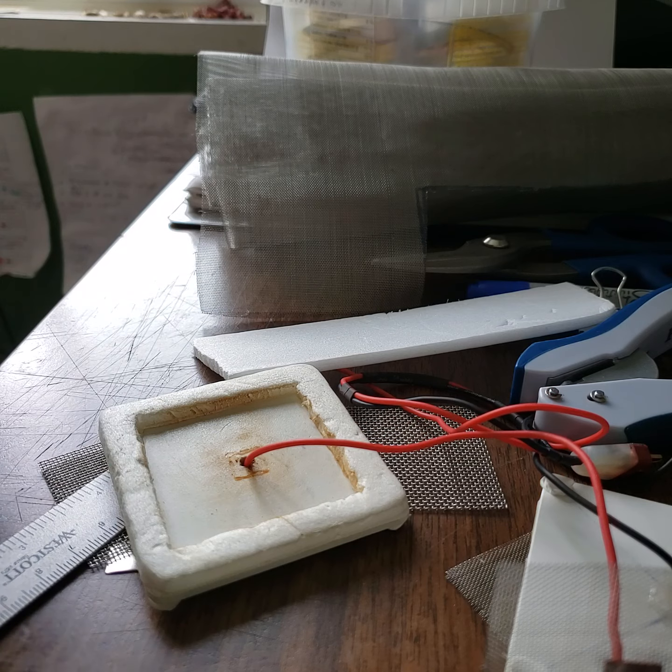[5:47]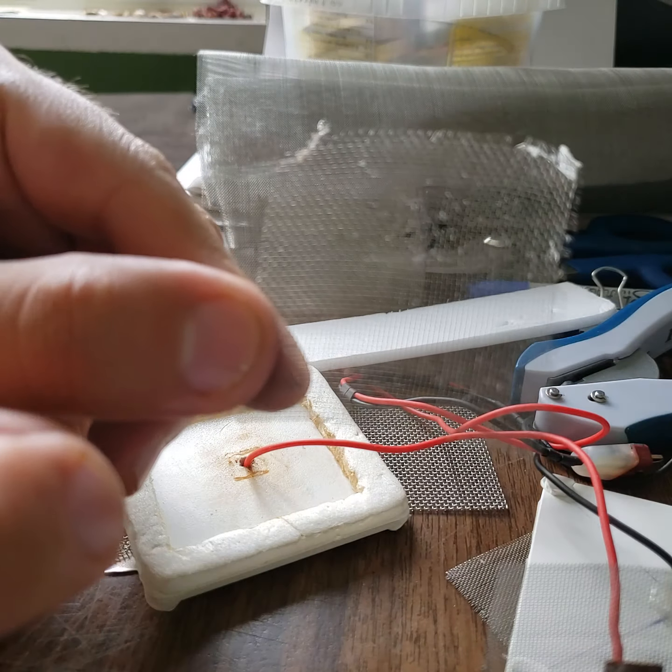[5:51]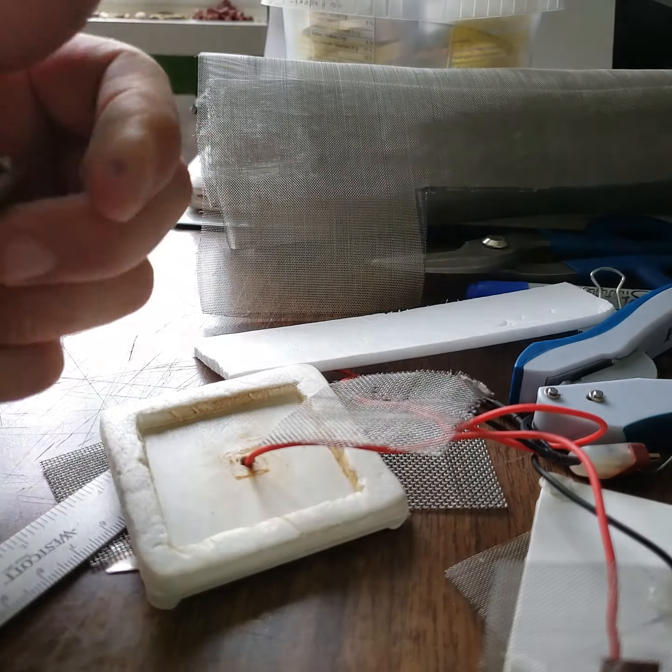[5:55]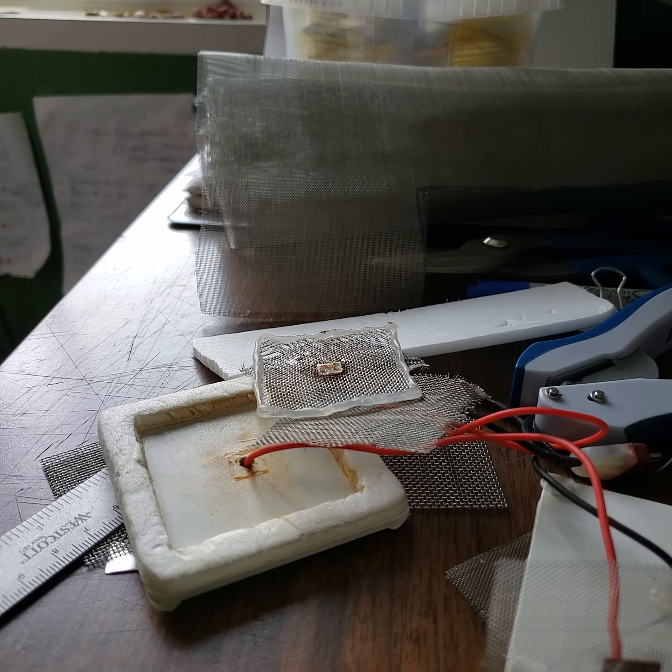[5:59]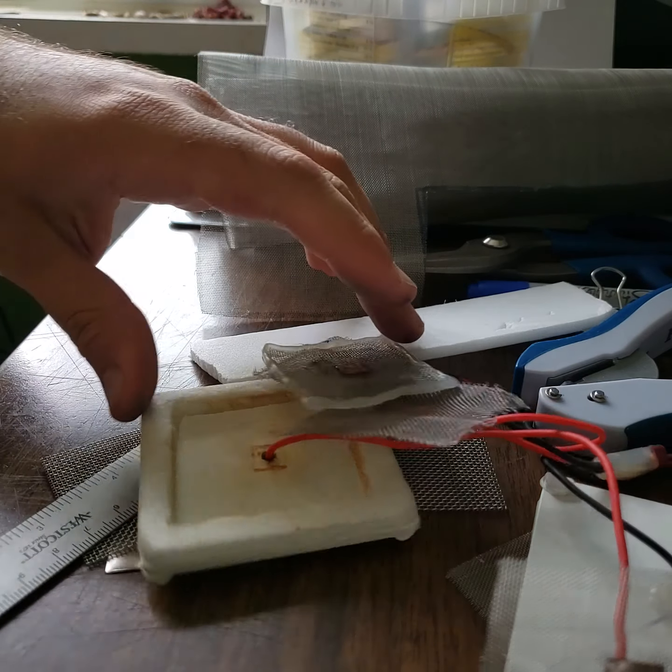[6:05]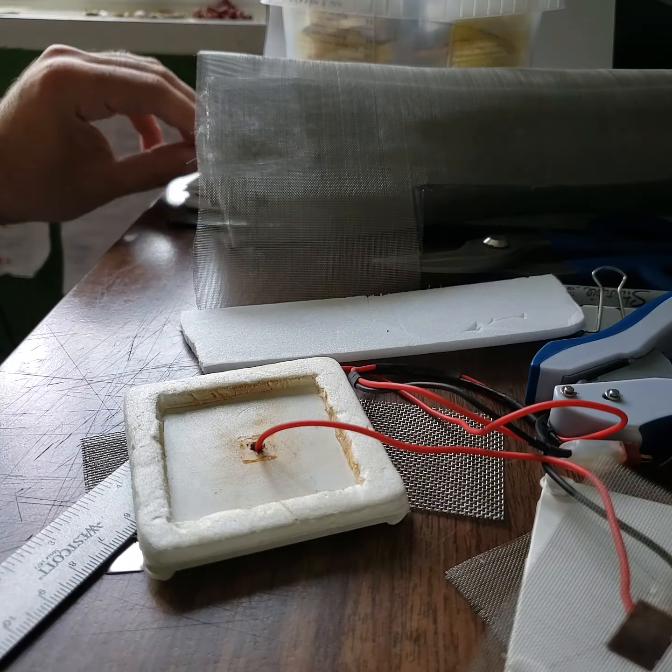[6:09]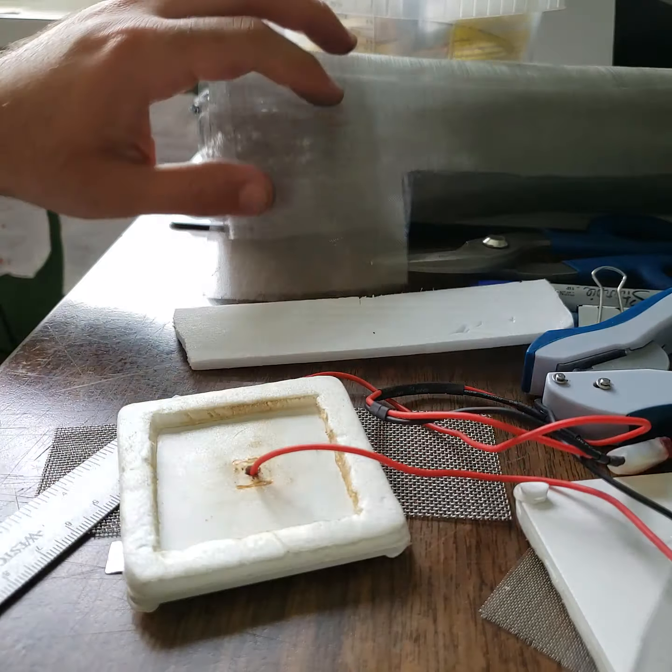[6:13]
So I already made an electrode before. This one is the filter mesh 40. I don't like it. This is not very solid, and when you use it for a couple of weeks, it will lose some of its parts. I'll show you how it looks. You see here, let me see if it can focus. You see some parts are melted. But the 20 mesh is pretty resistant against the electric current.
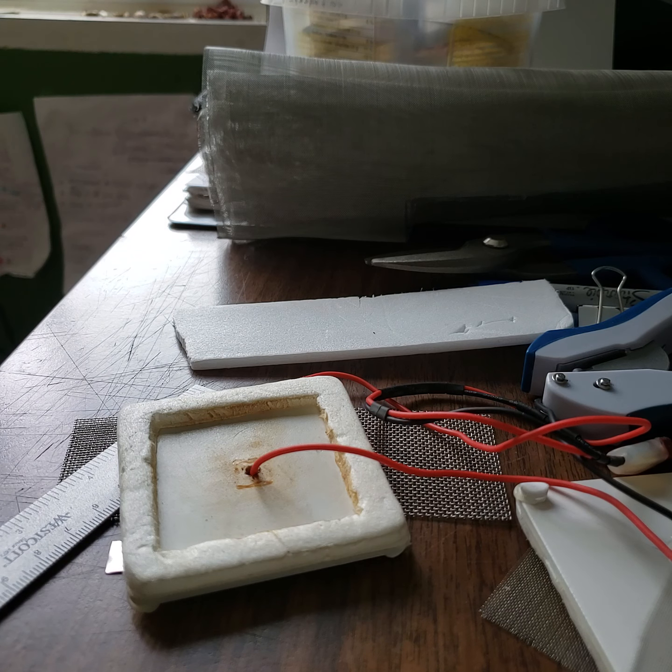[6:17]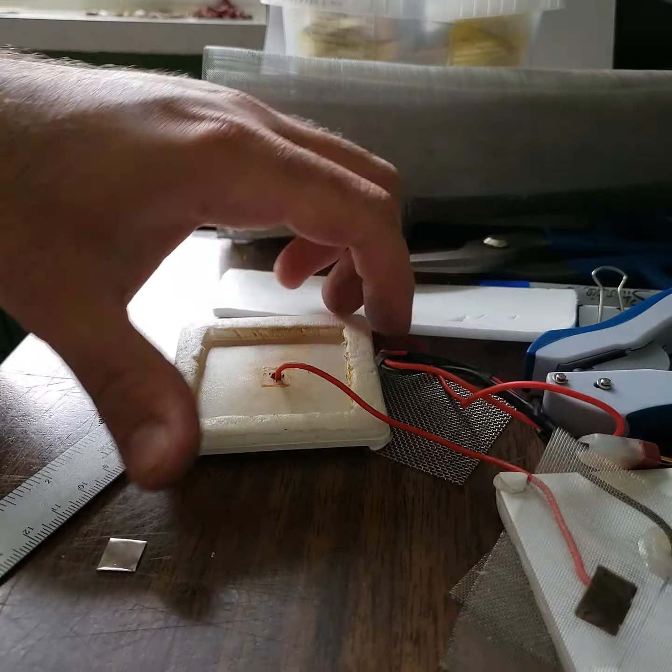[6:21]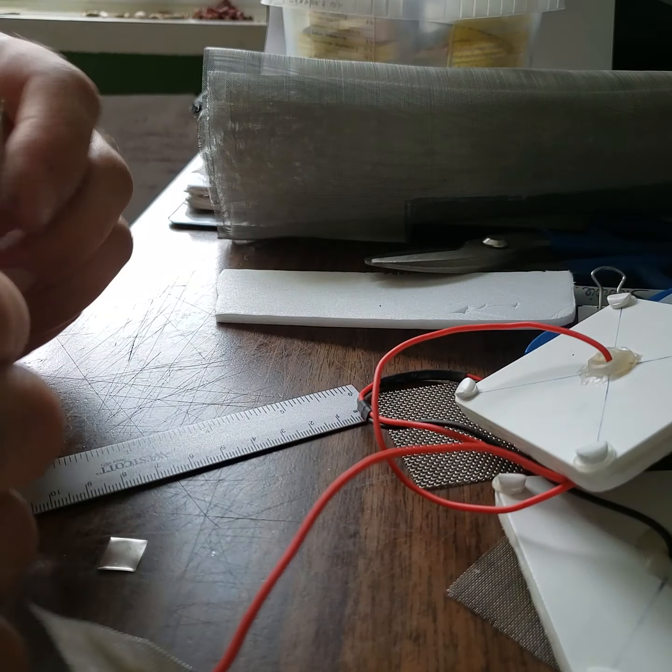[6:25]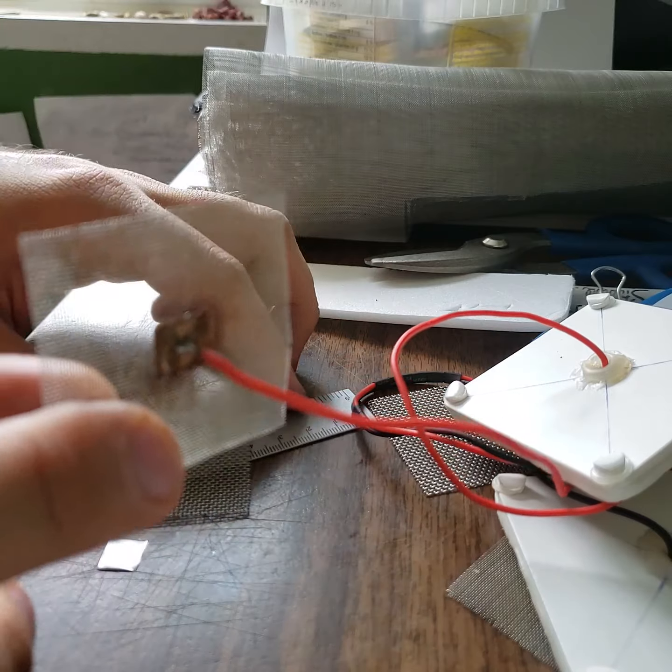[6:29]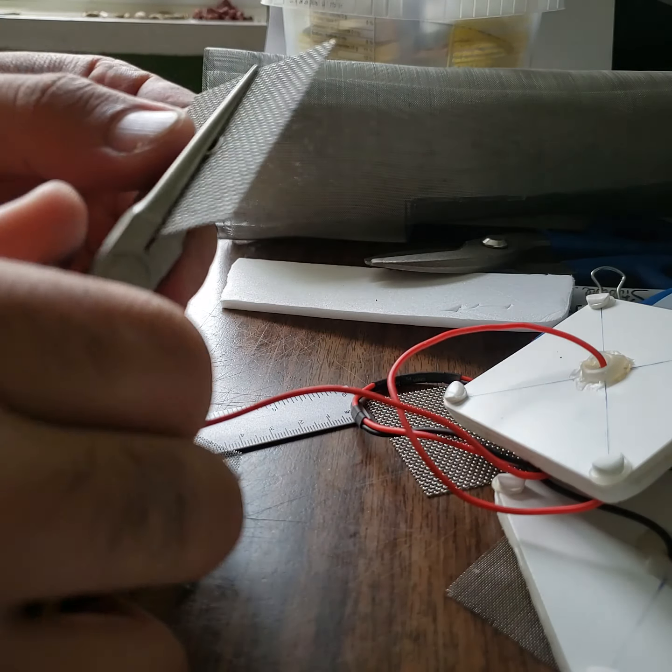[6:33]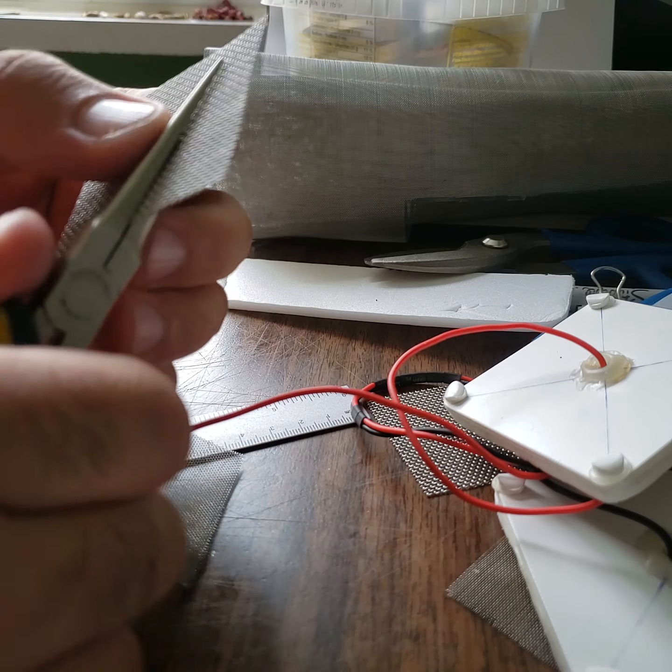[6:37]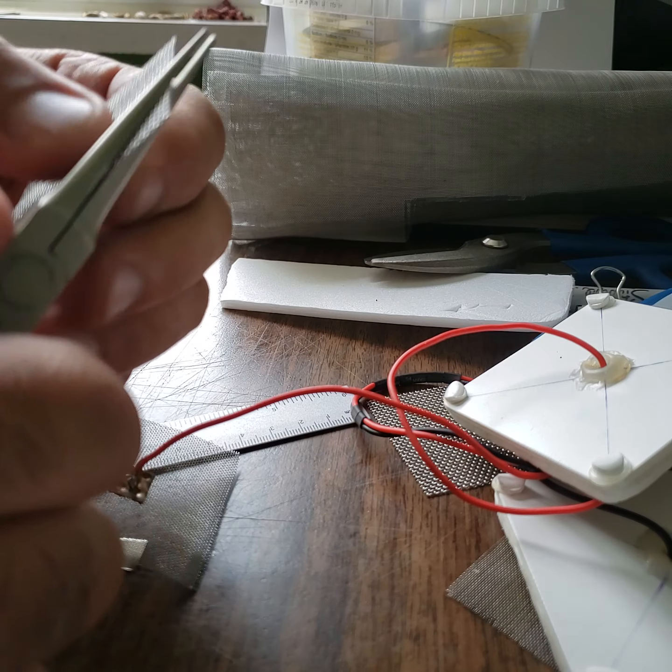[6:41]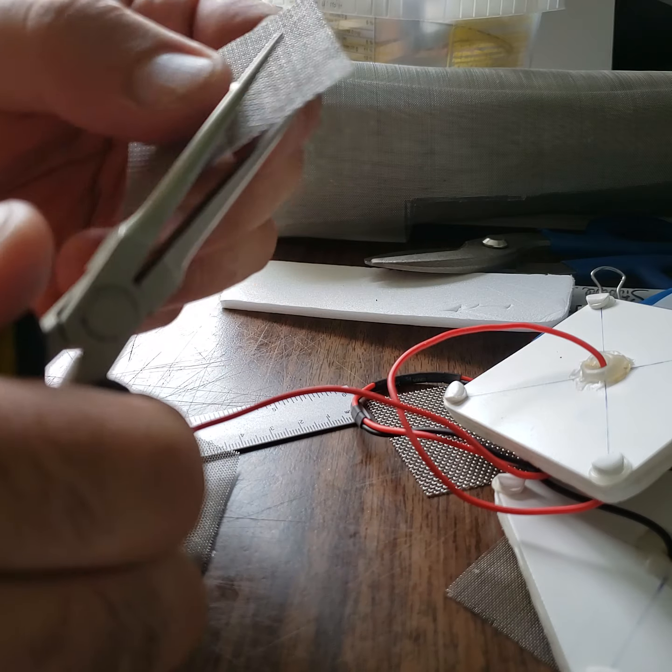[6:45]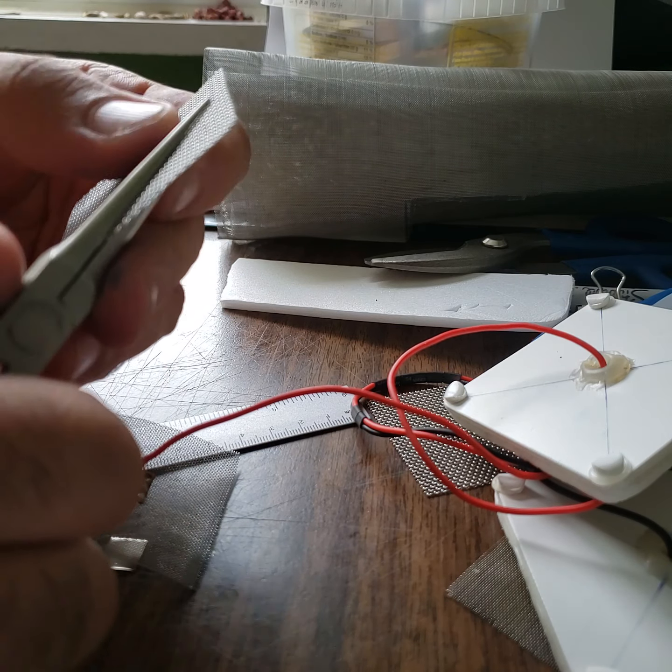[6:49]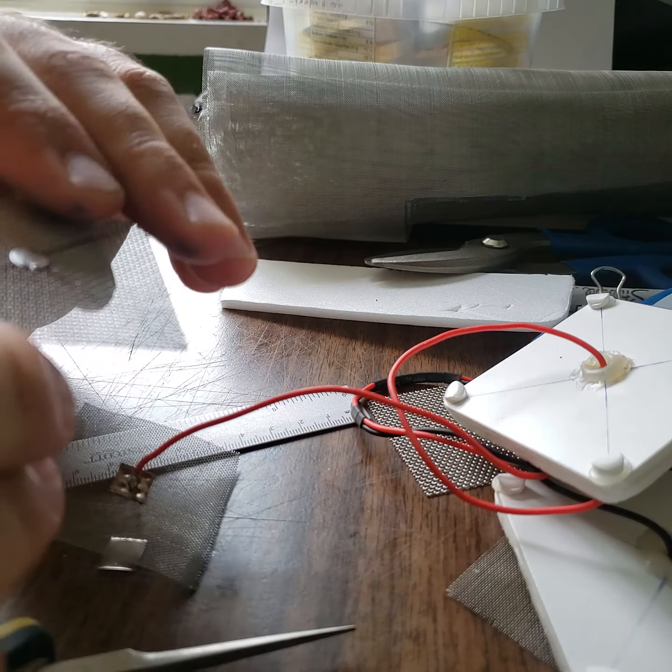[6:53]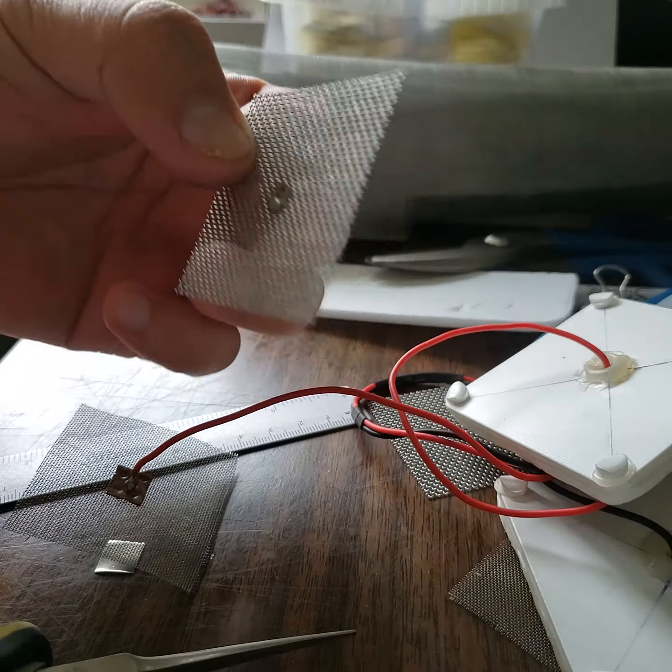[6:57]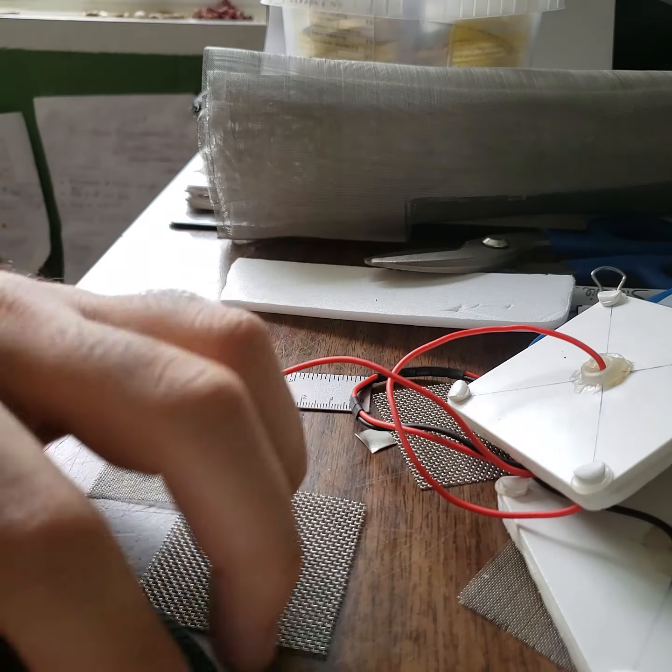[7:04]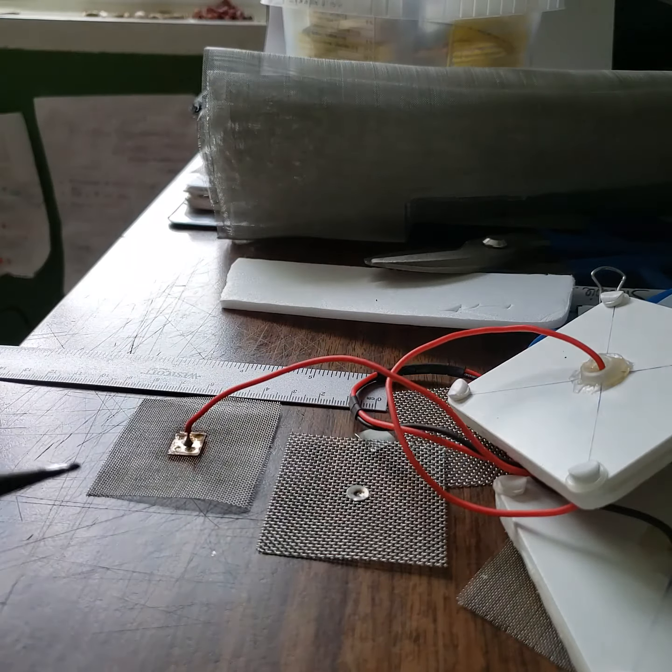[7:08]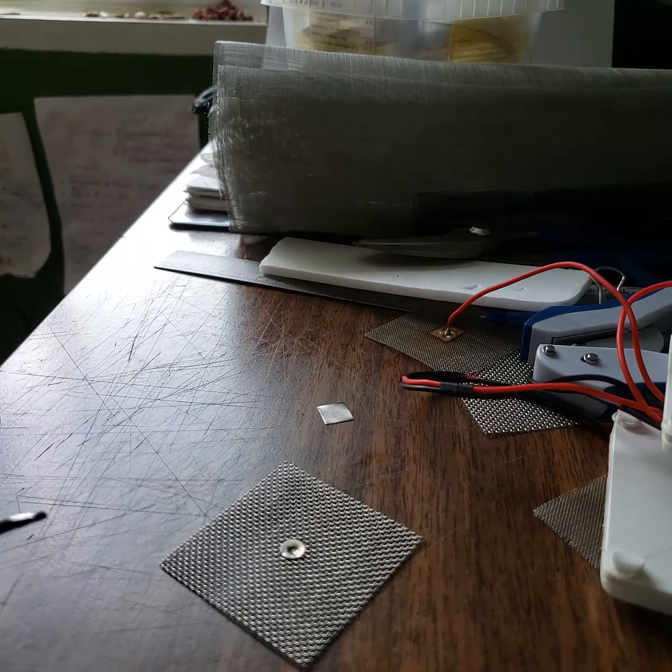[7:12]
So now I'm just preparing my soldering machine to replace this electrode I made before with the new one I just made. You can flatten the electrode, so when you put the sponge, it can distribute the electricity evenly over the sponge. So yeah, okay, that's now pretty good, ready for soldering. It's at 350 Celsius, what shows on my soldering machine.
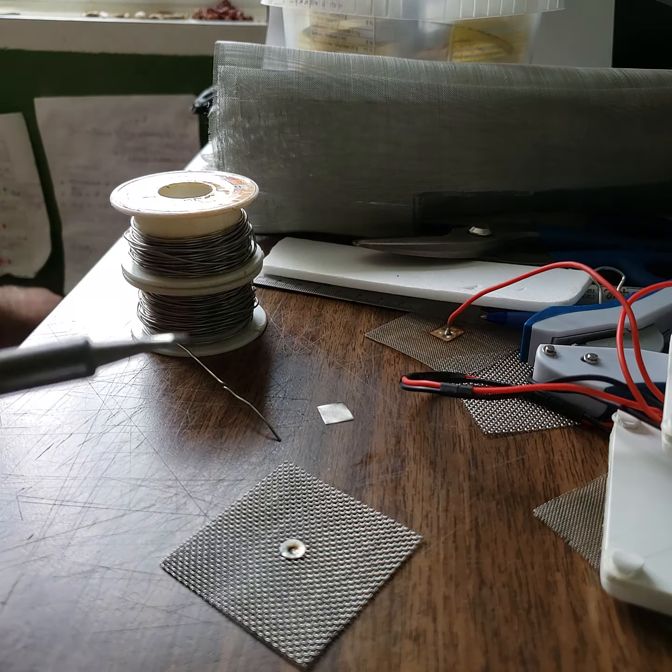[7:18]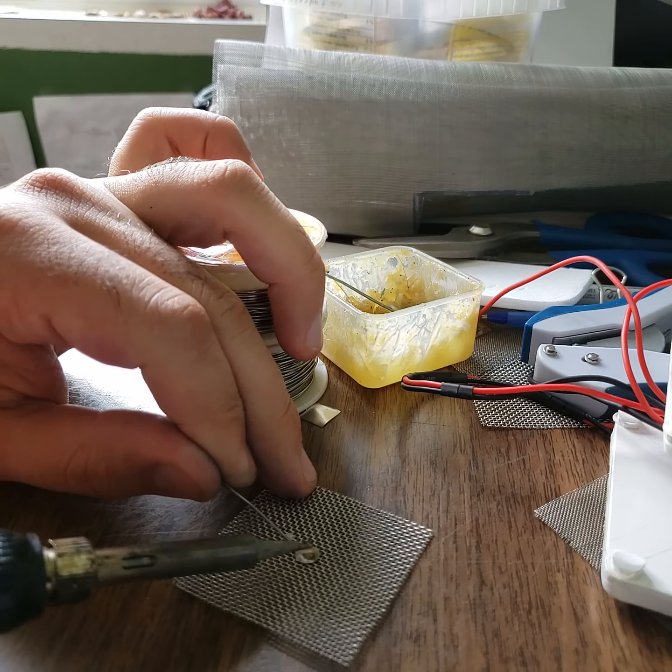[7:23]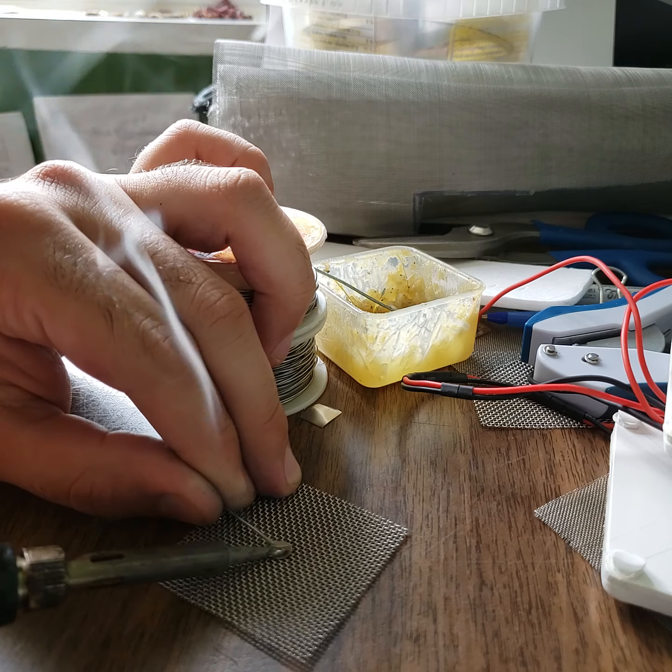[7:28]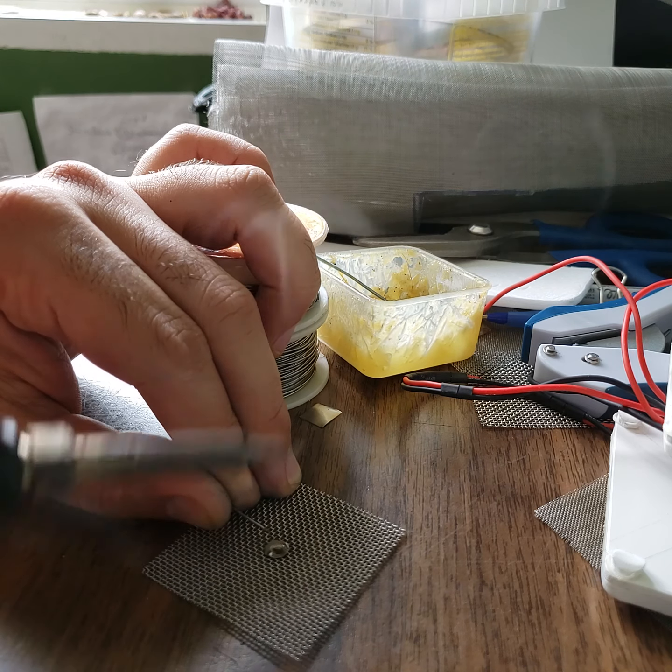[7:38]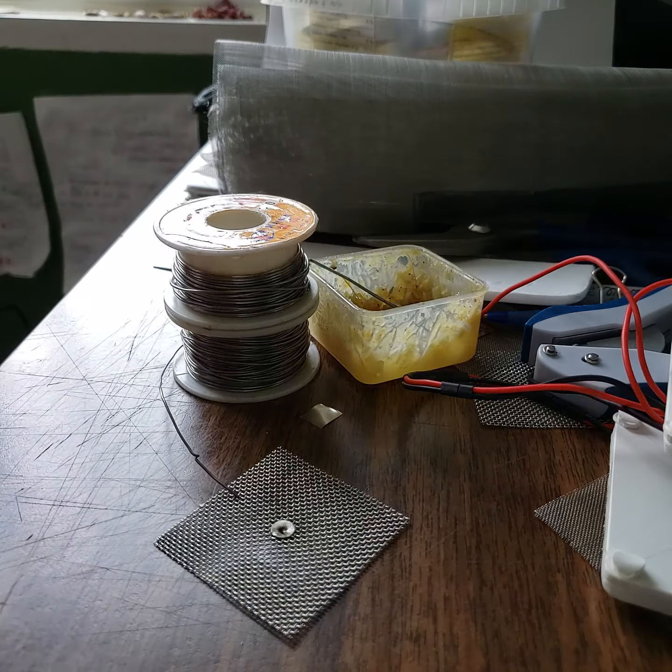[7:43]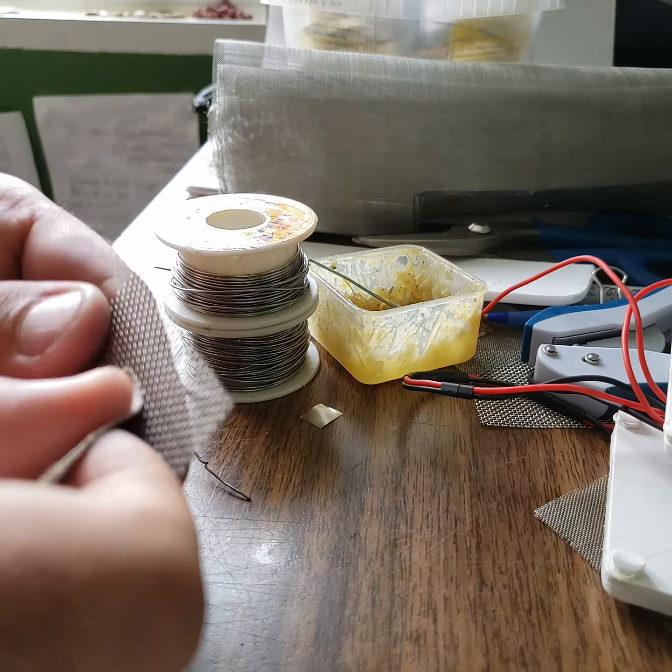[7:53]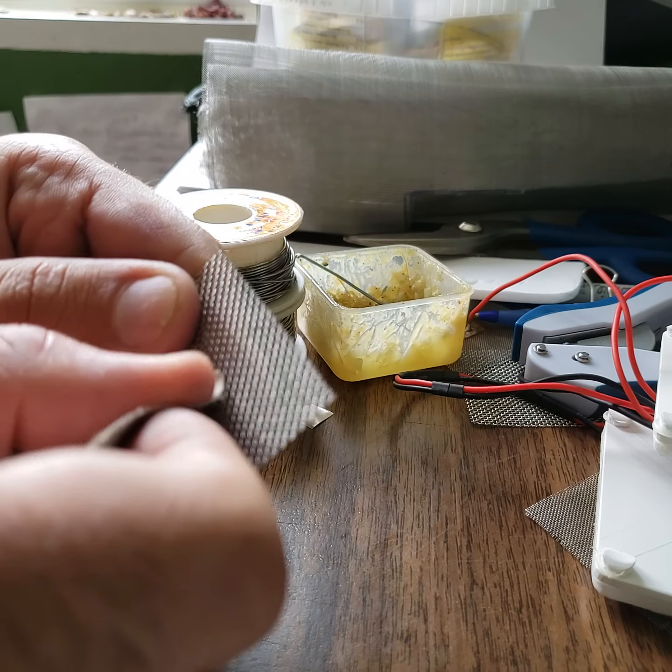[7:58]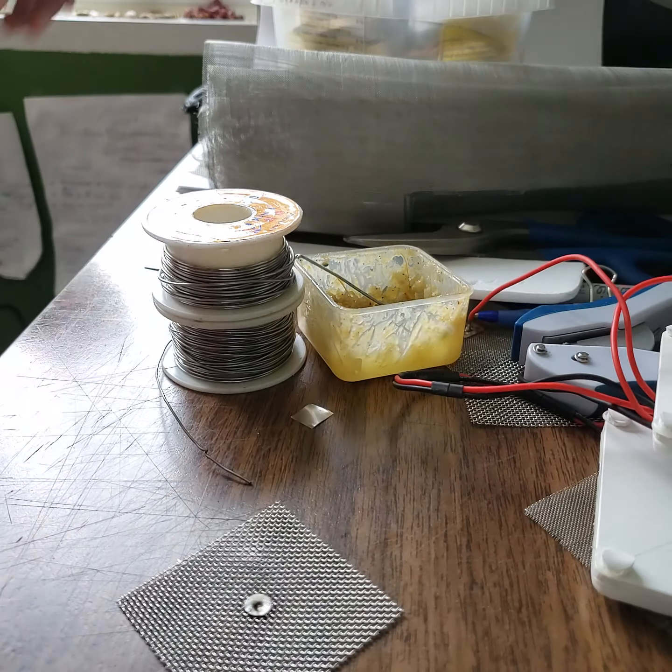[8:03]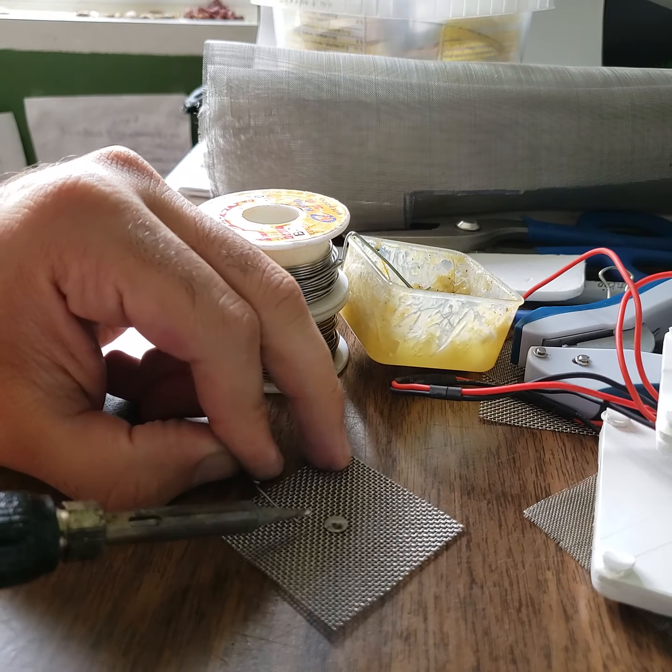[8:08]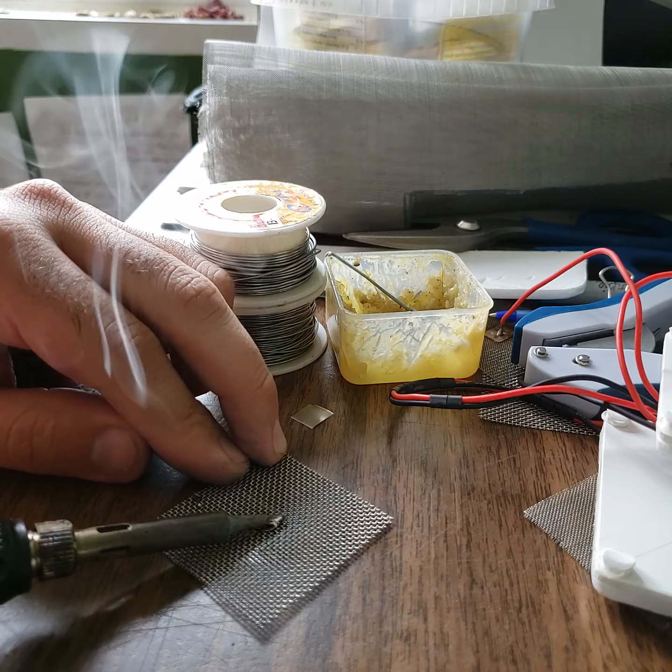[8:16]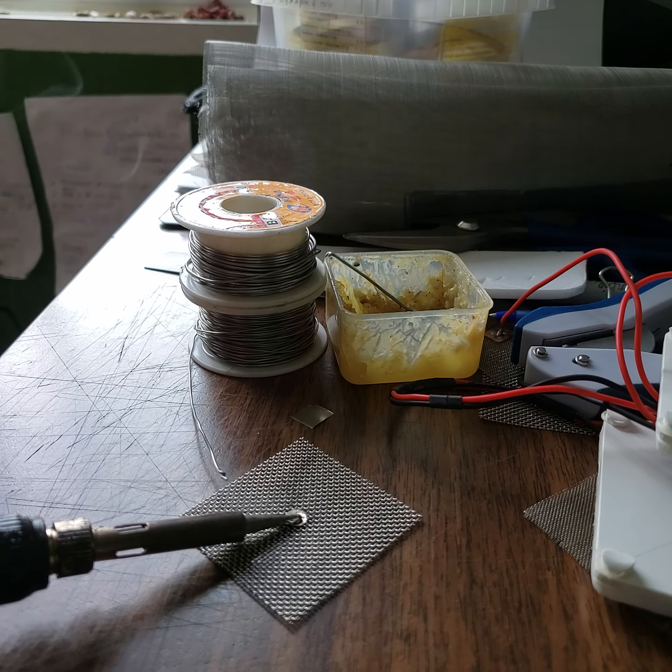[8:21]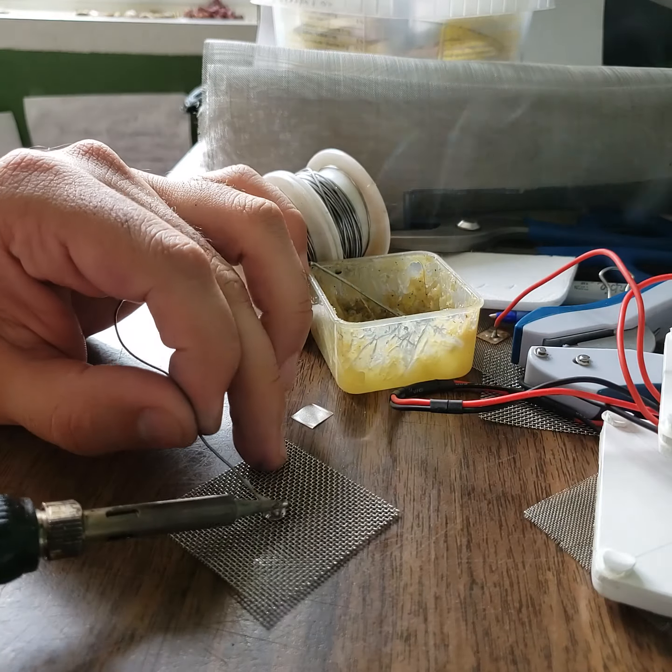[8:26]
Okay, I use some acid here. If the solder doesn't want to stick to the nickel, it's because the exterior part is oxidized. What you should do is use a sand sheet to remove a layer of that, and the solder will attach more easily. So now you can see, and I increase the temperature of my soldering machine. So now it's working.
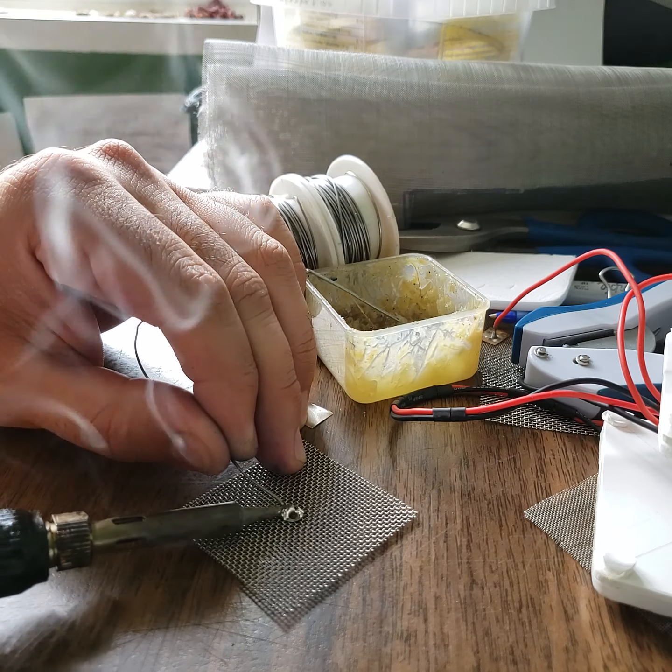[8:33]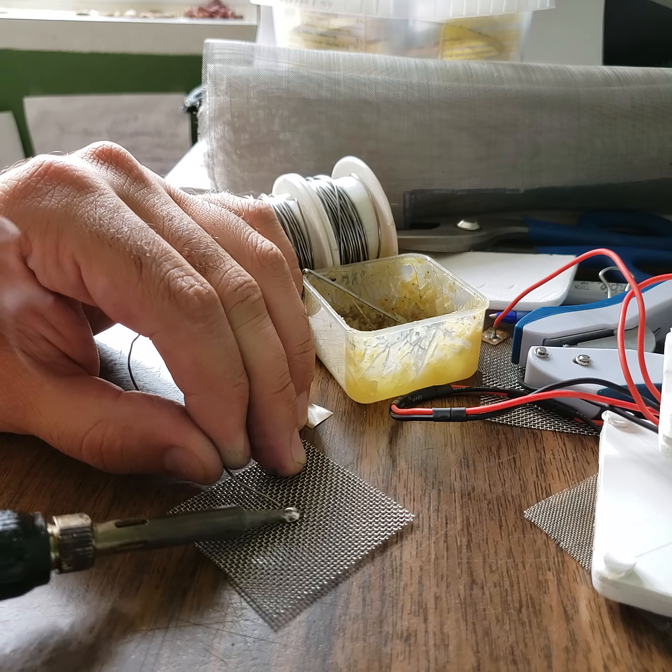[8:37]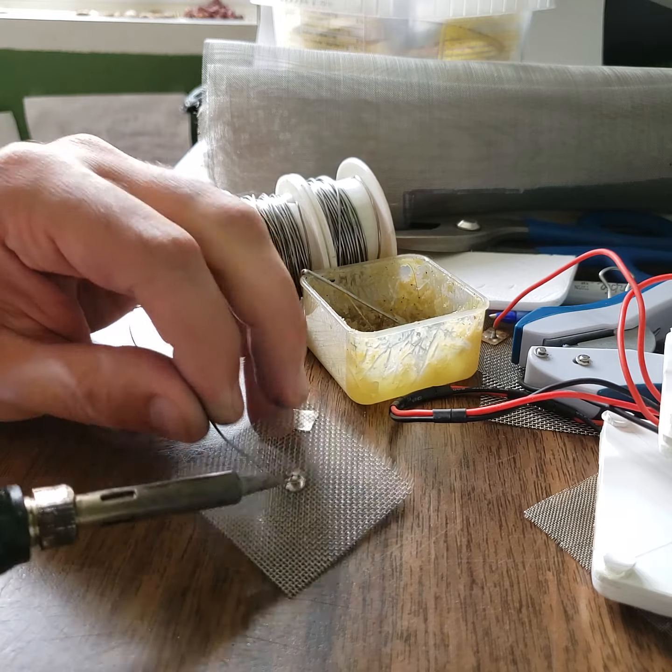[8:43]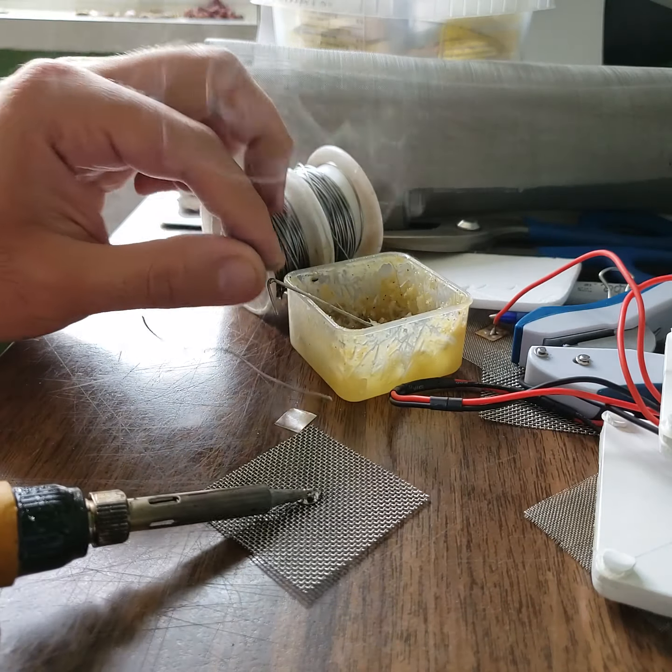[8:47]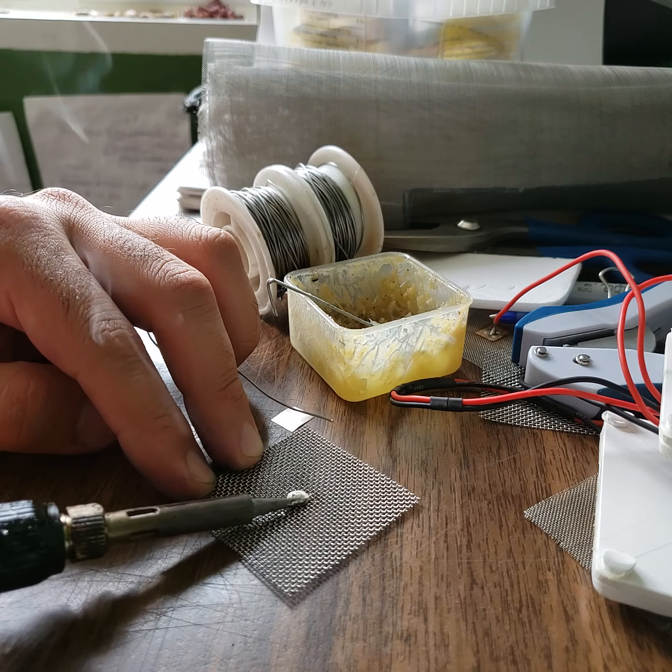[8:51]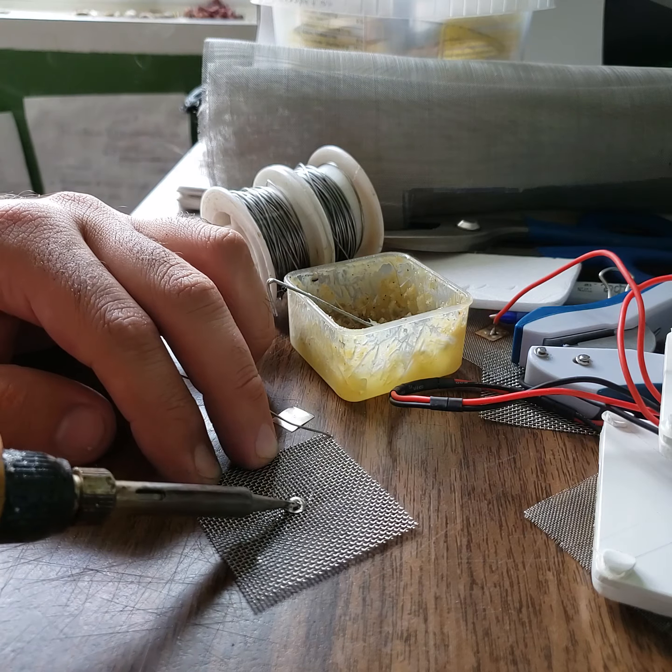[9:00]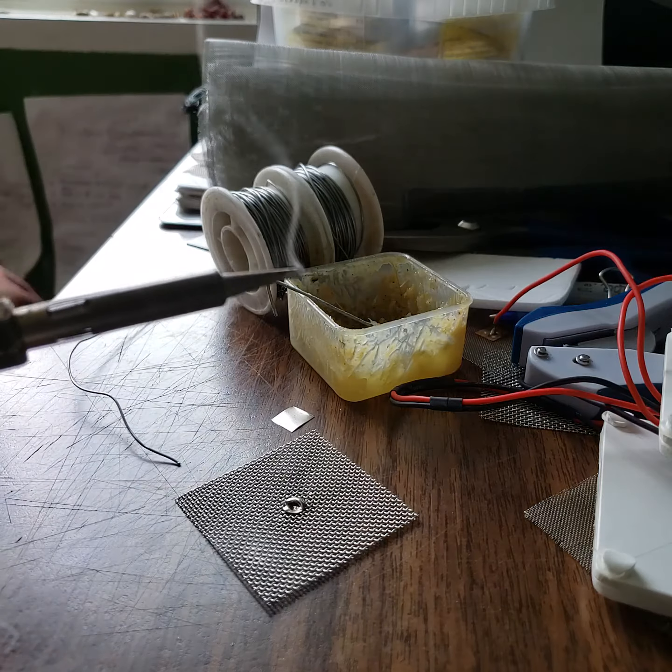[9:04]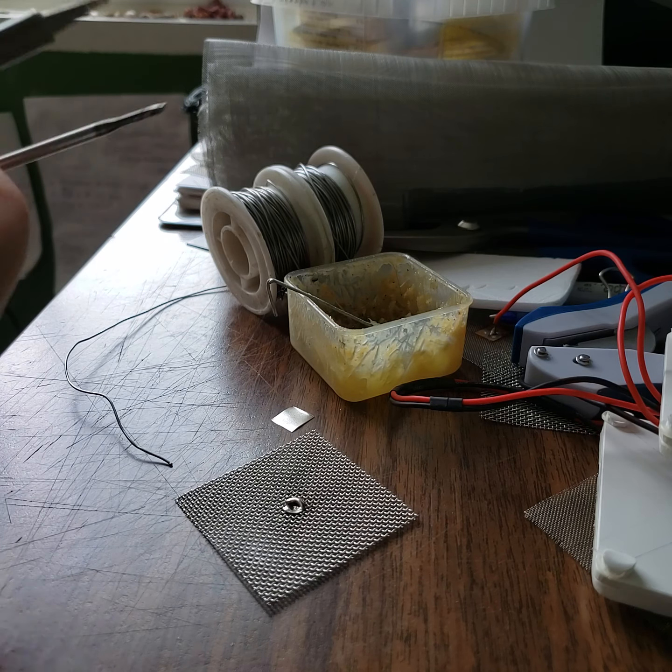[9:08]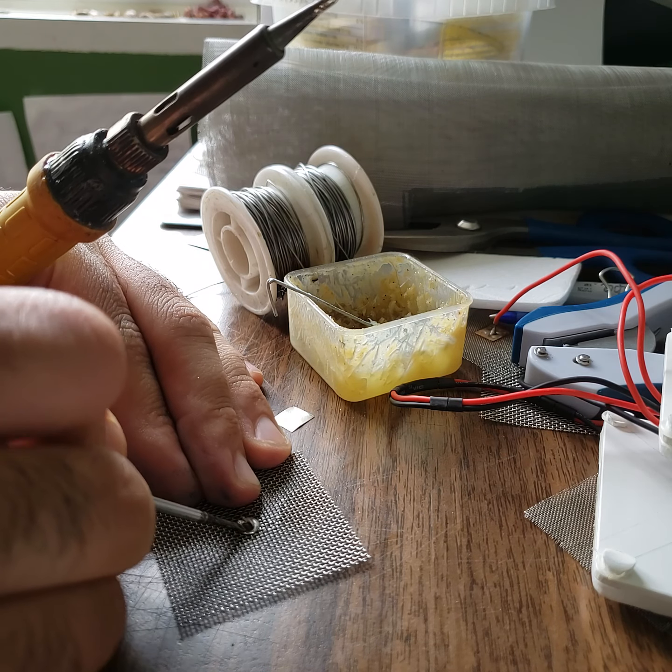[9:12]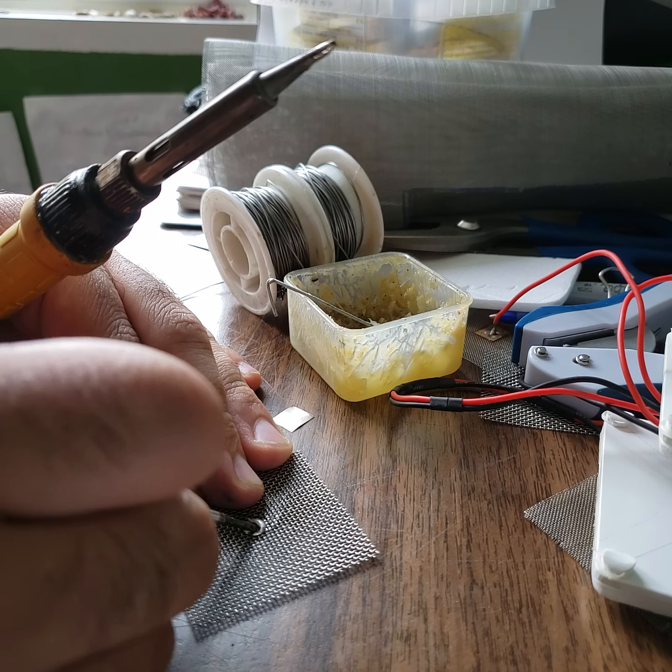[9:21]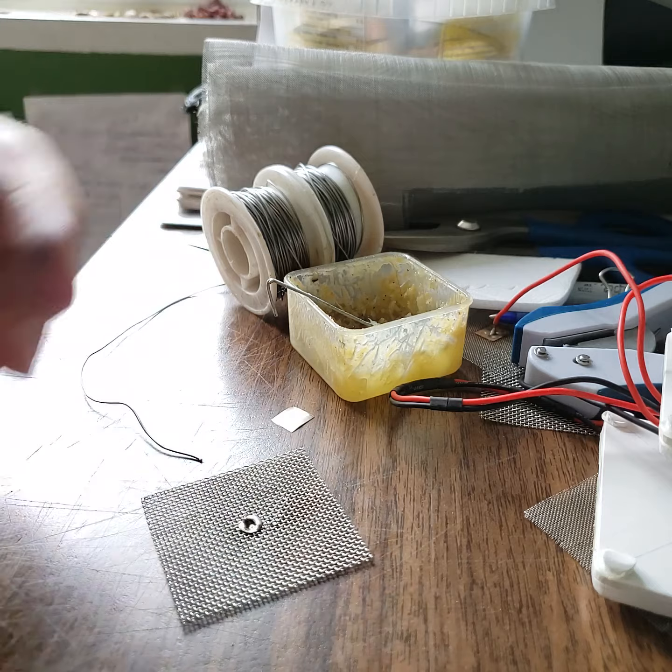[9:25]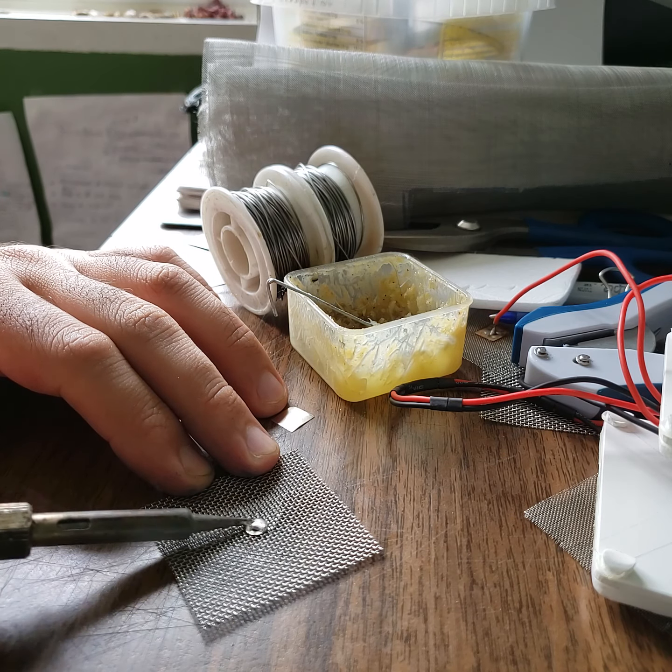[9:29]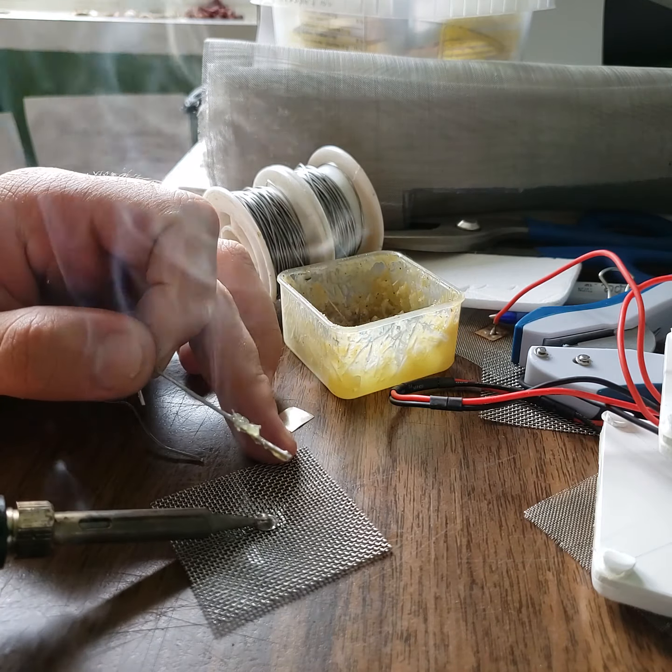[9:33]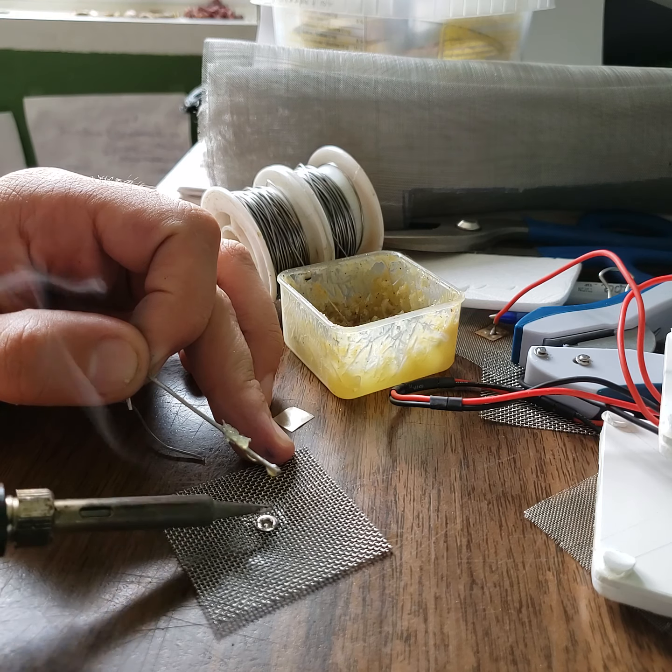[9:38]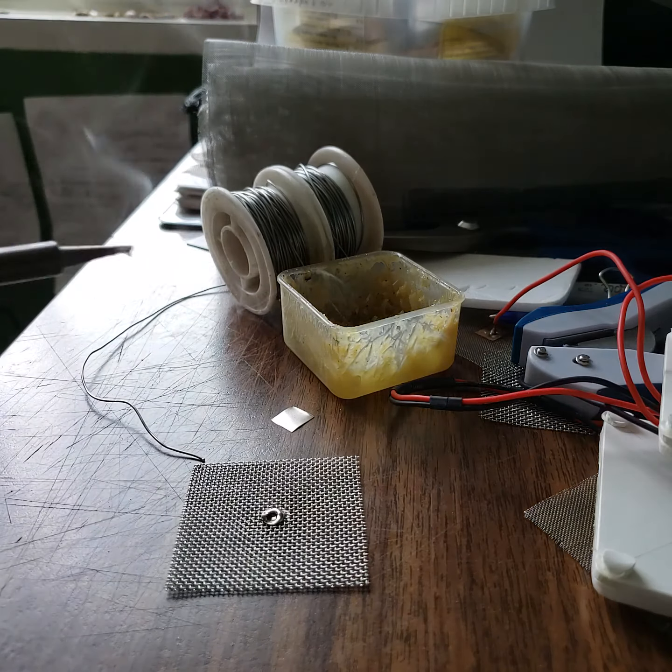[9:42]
Also use some acid. Okay. Still some part doesn't let the solder attach, so what I'm going to use is a small screwdriver. I make some scratches, which removes the oxidized layer. I believe this time it should work fine. So let's try. Okay. Still, okay, not too bad. Okay, finally.
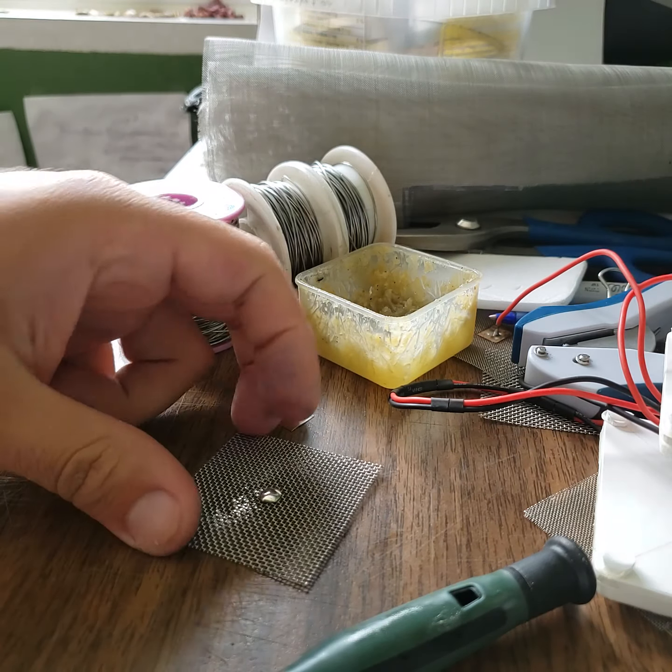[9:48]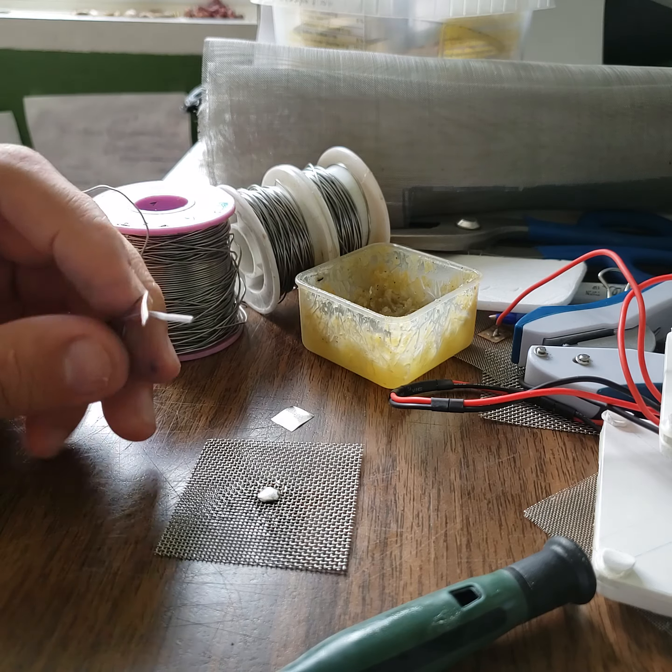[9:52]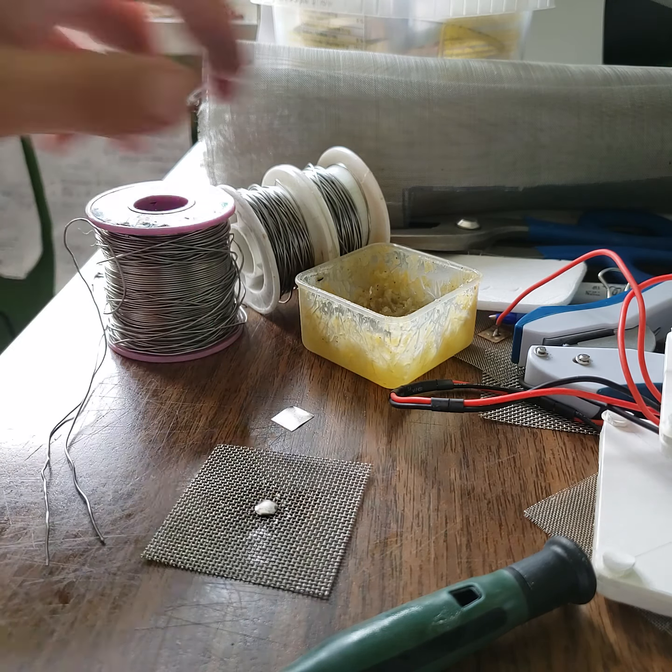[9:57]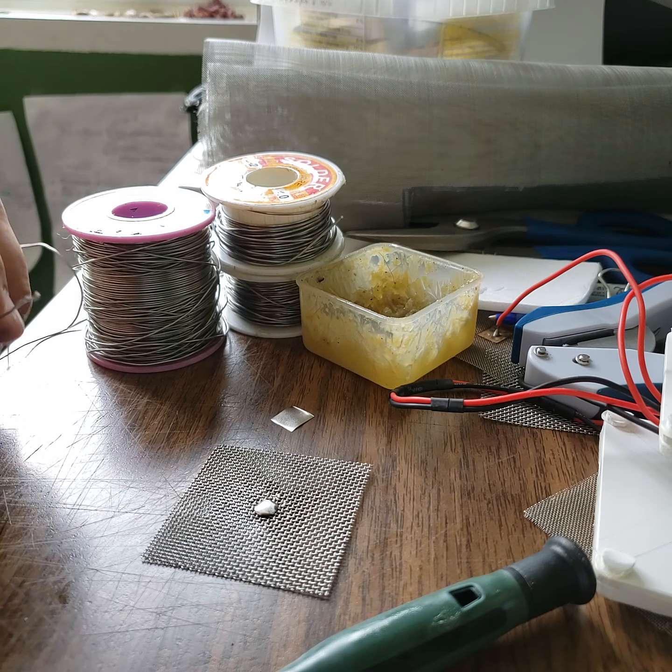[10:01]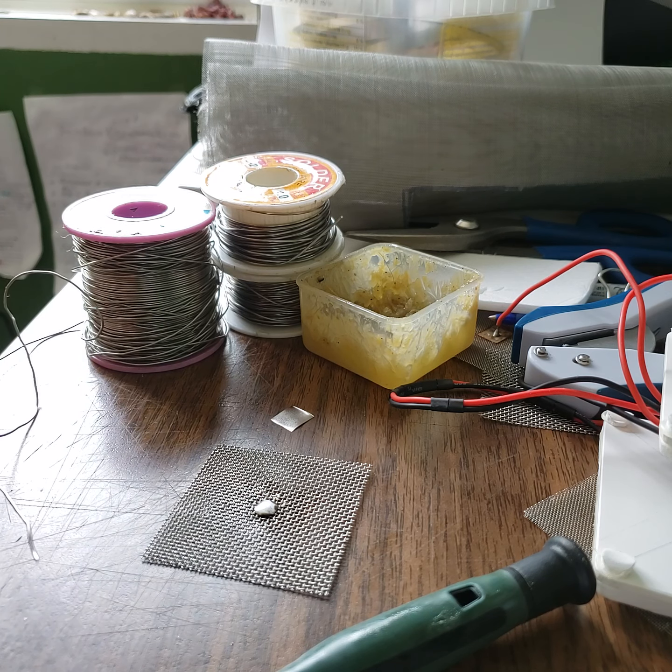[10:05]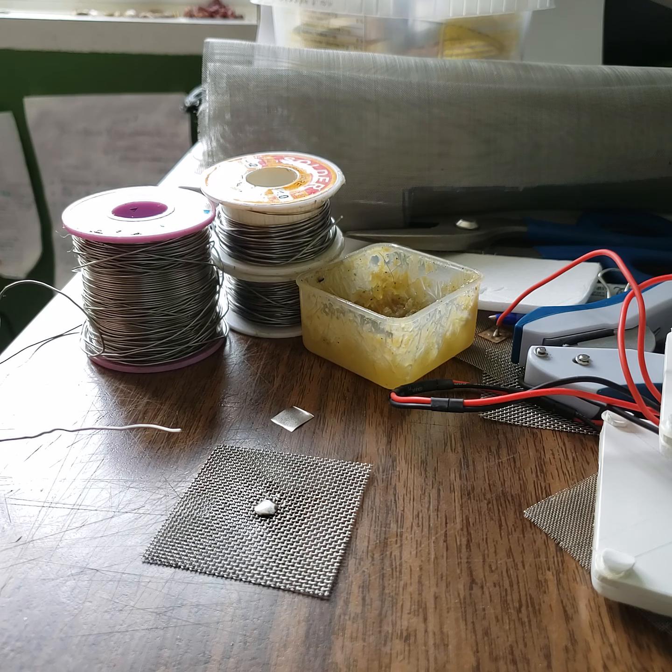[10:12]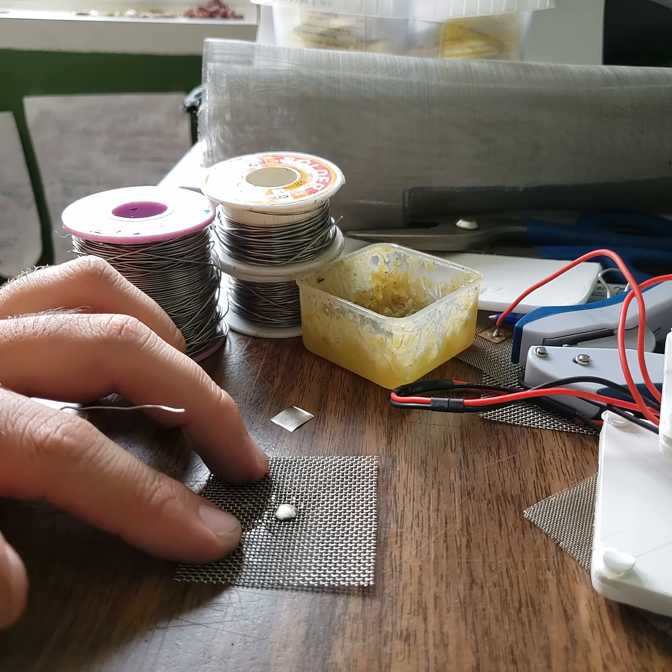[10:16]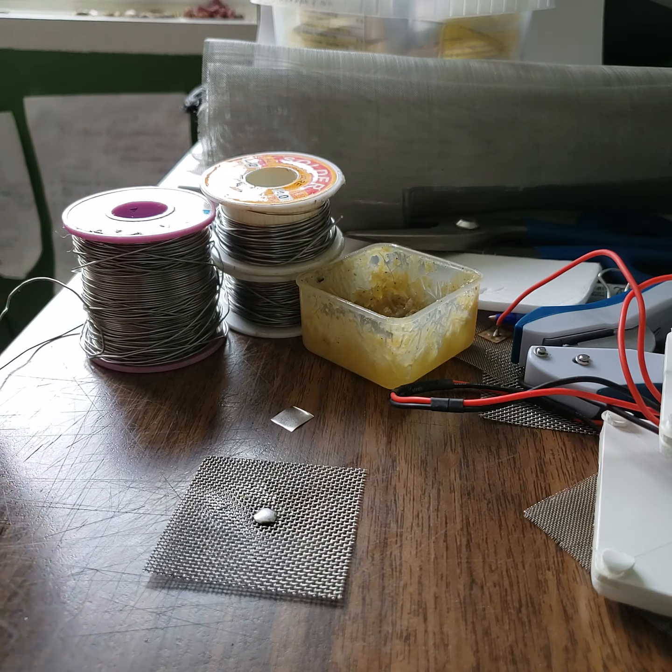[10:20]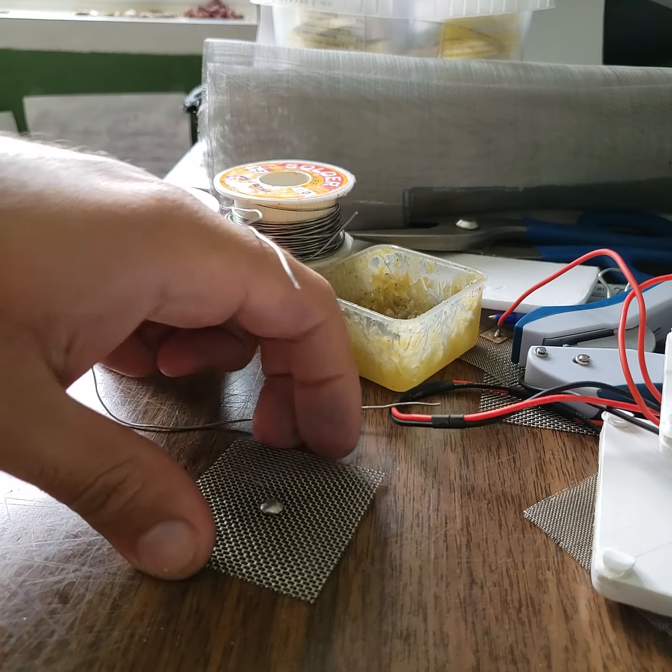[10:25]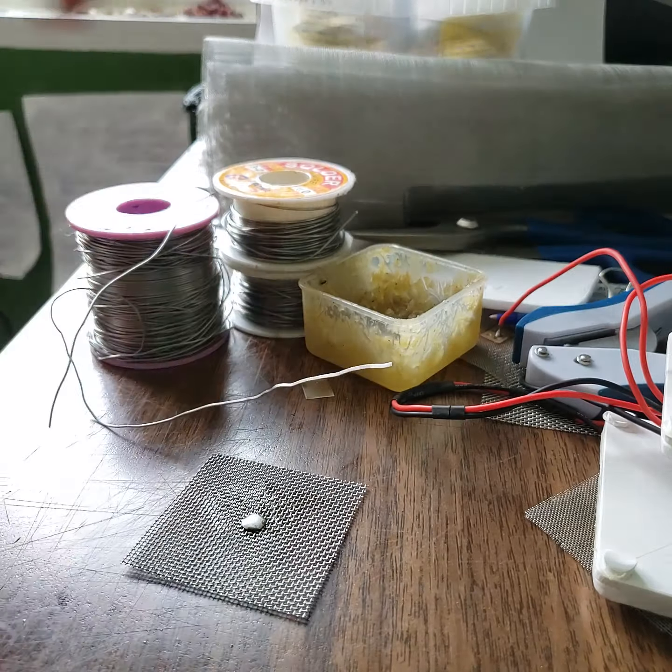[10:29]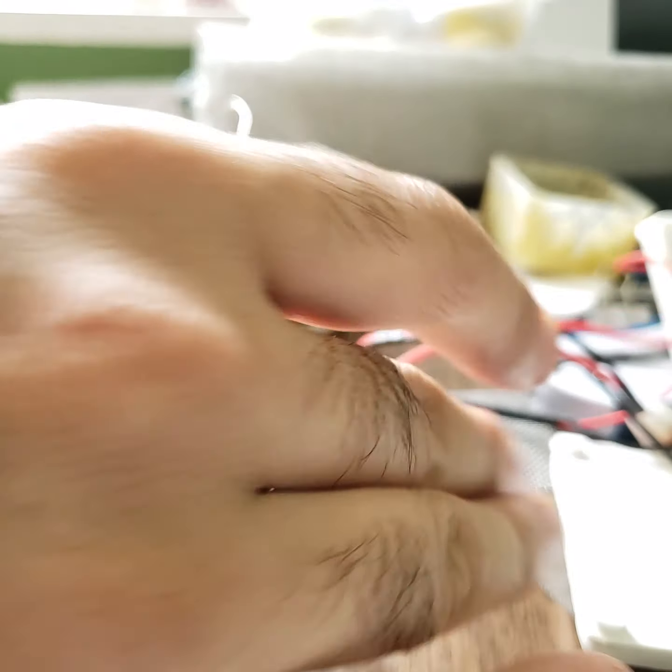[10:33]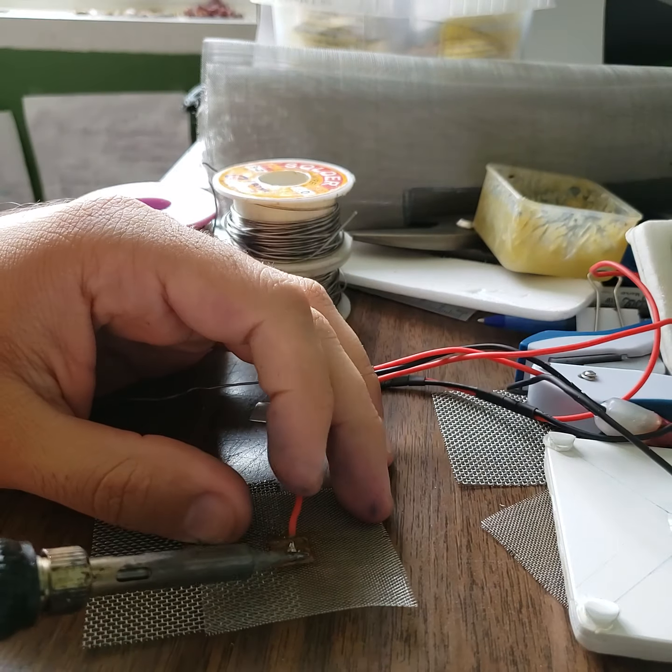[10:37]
I used a different soldering wire. Depending on how much lead and tin is contained in the soldering wire, it can be easy or difficult to get attached to another piece, but I used a portion of the two, and finally you see that it's pretty well covered. Now this is the time to connect the wire to the new electrode.
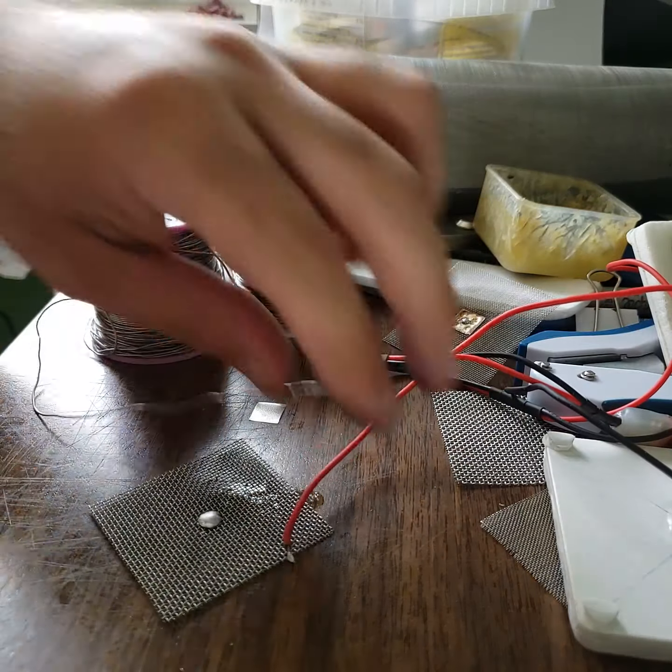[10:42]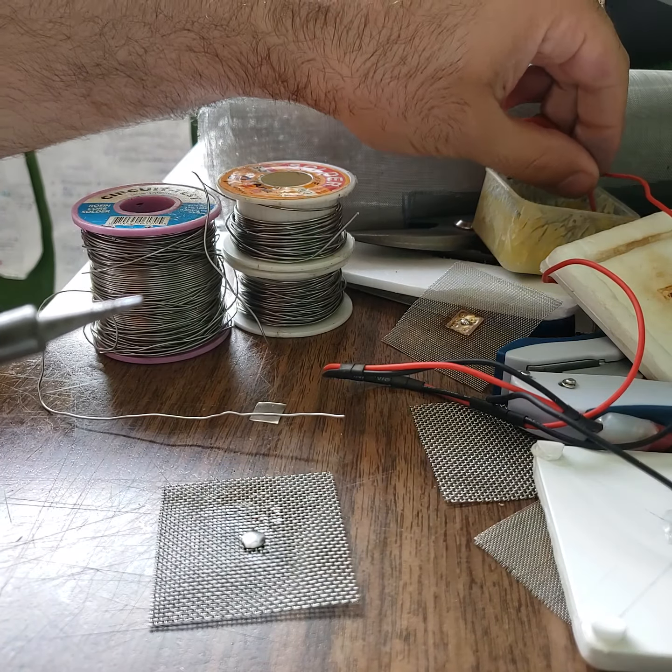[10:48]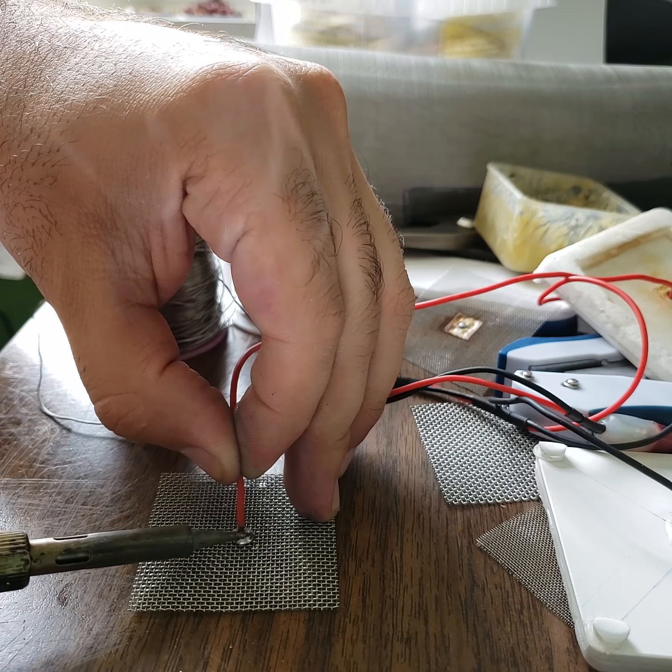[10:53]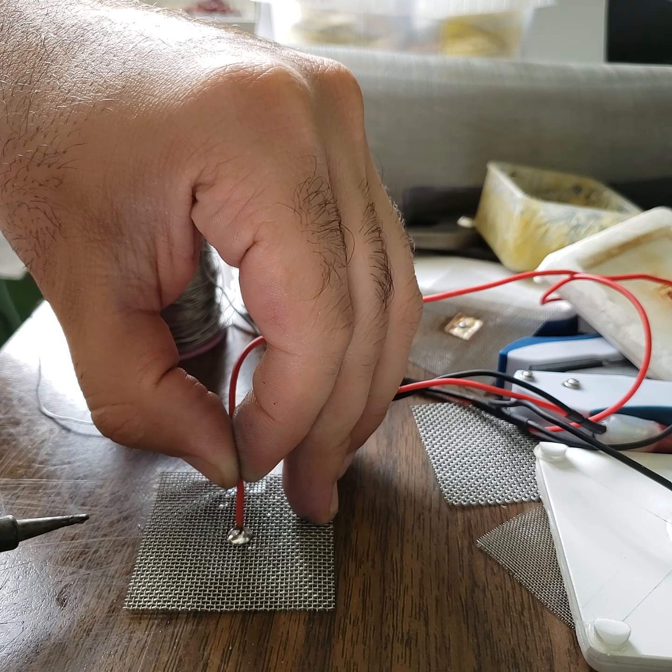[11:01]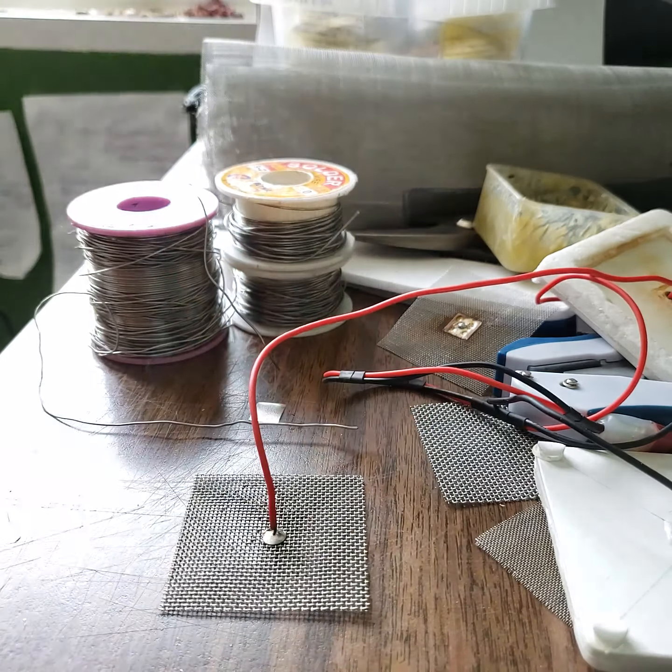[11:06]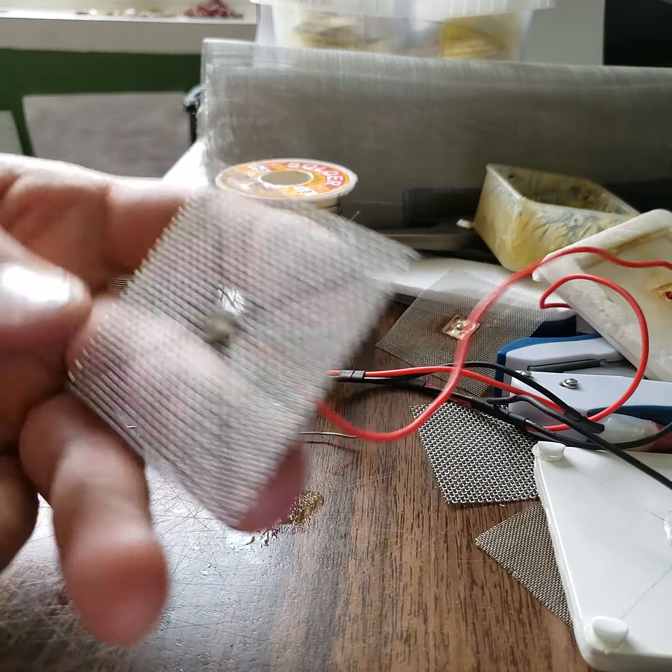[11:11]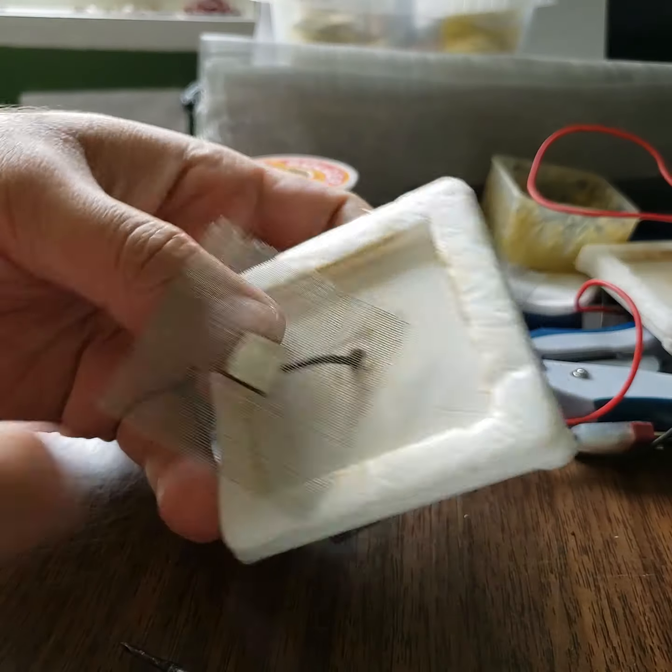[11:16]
So I just remove this here, take that away and connect it to the new electrode, exactly placed in the center. Just be patient for a couple of seconds and you can release the wire. Now you have your electrode ready. It's done. You can do the same for the other one.
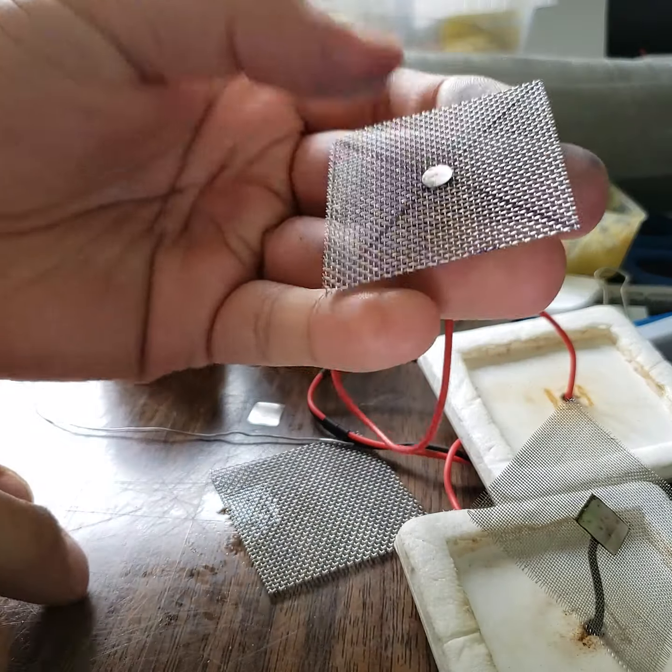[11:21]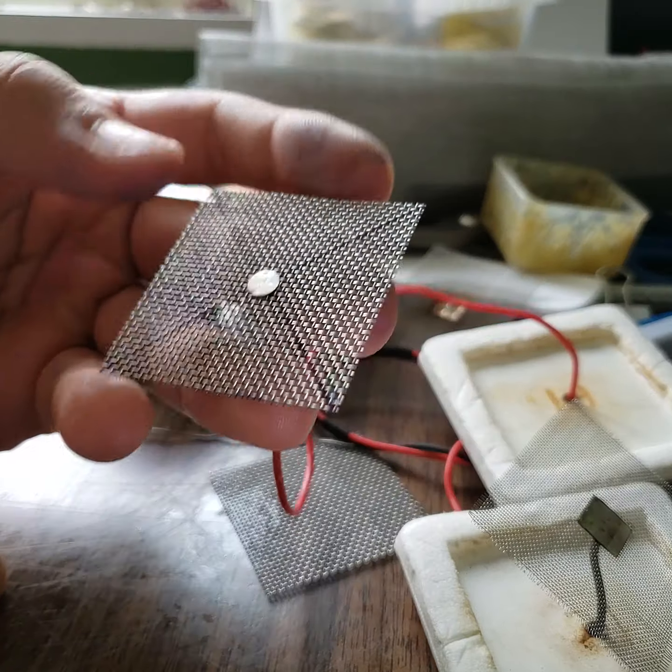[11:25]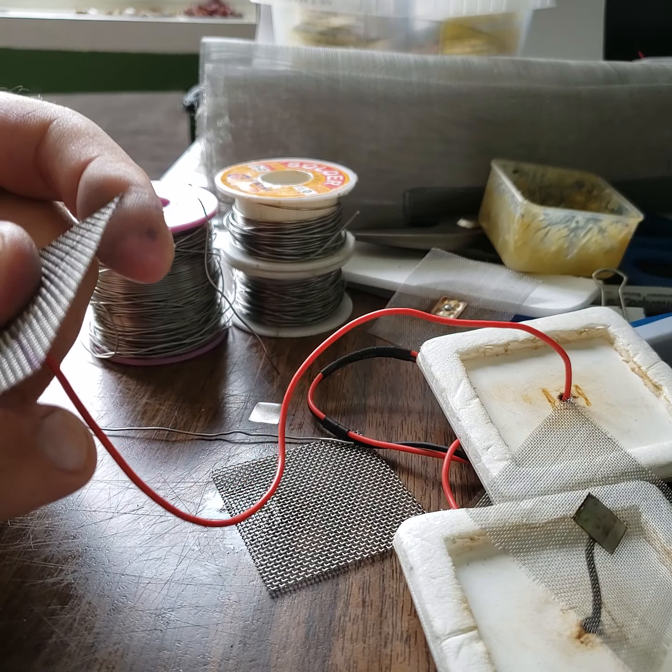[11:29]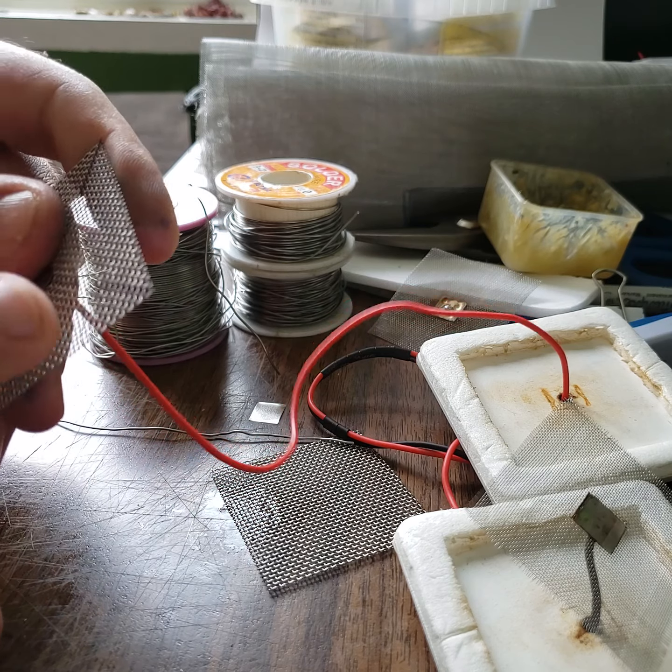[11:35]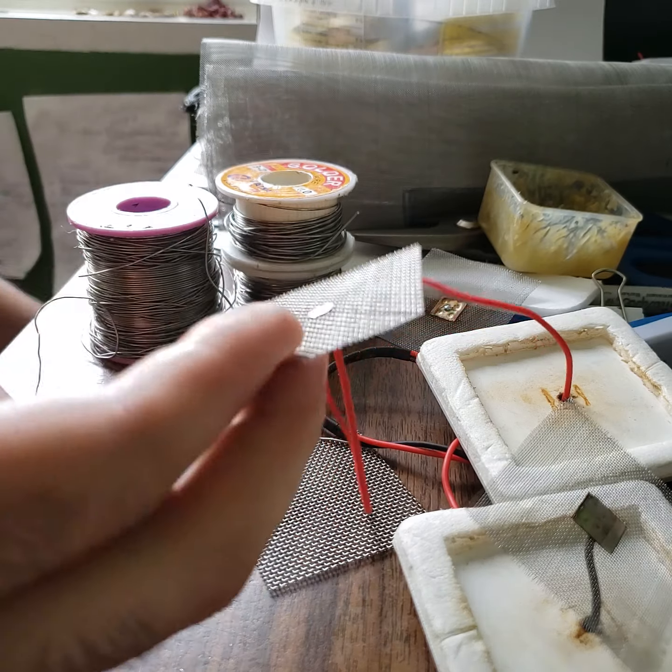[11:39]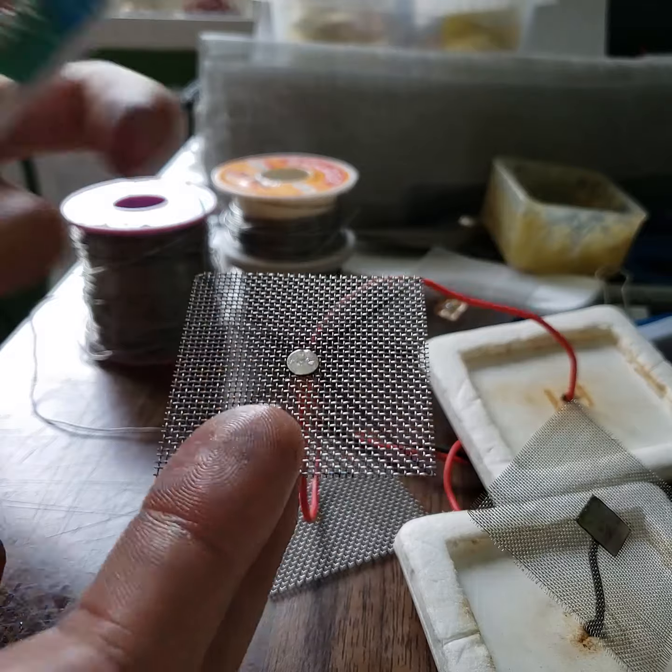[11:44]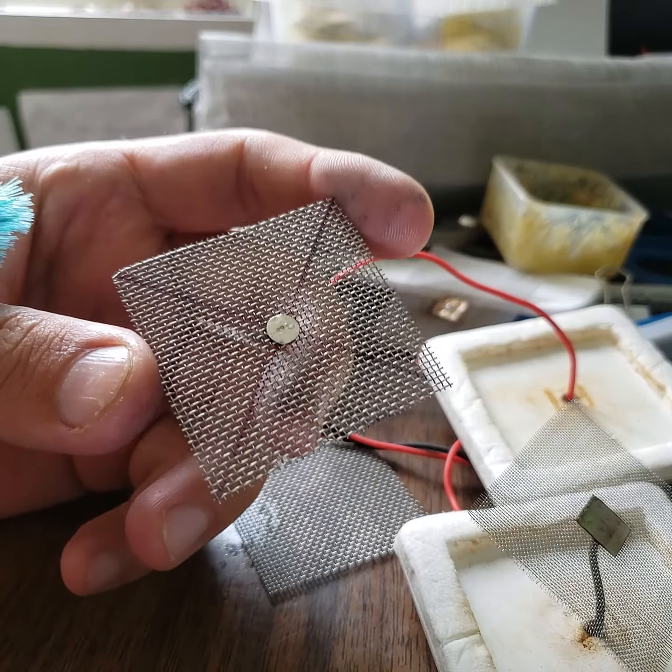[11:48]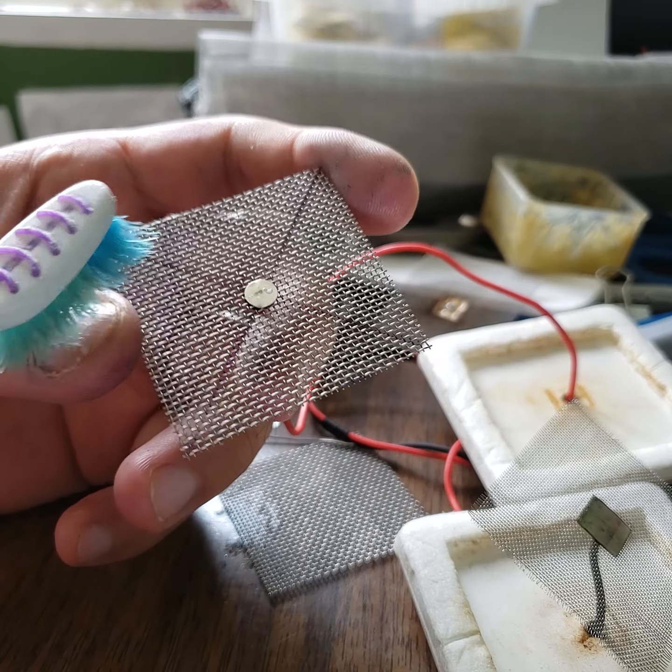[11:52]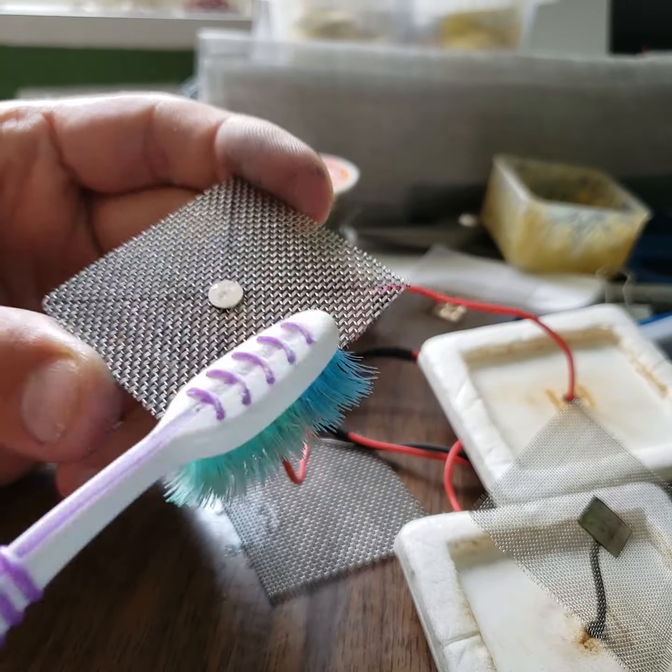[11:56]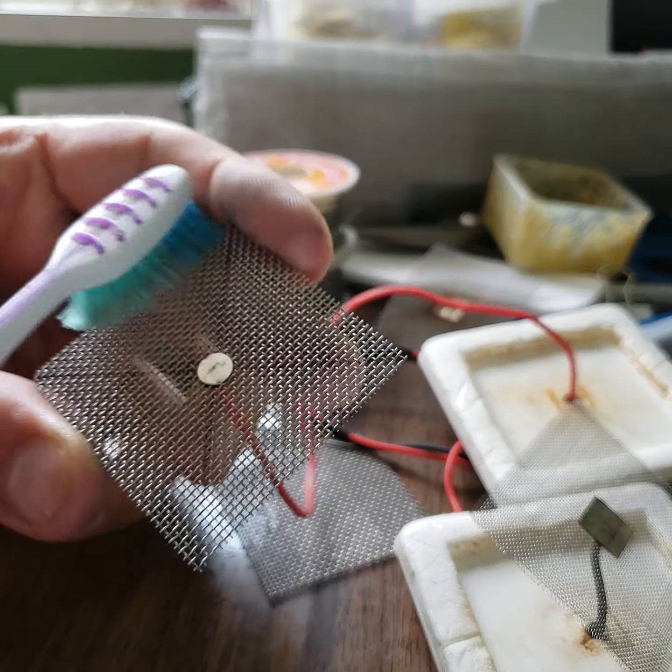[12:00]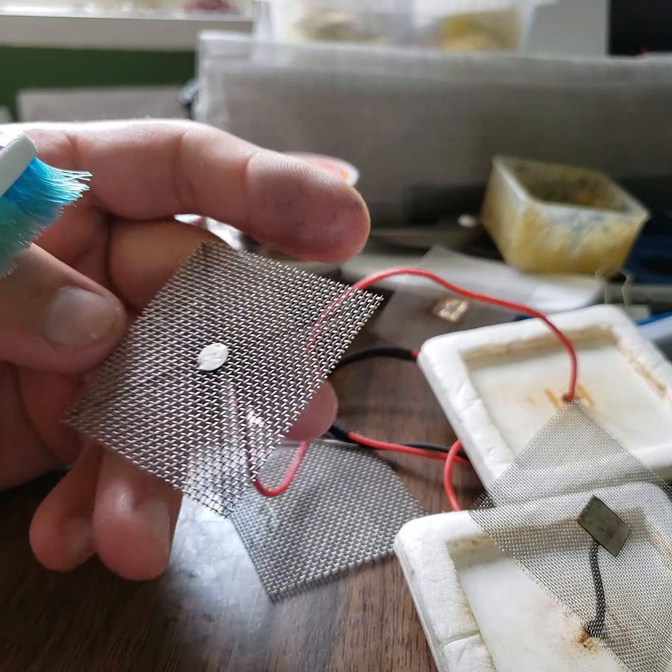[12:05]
Now you have this electrode, you save 10 bucks, and that can last for at least 2-3 months without any problem. What I suggest is, because of using saline, which contains salt, it can make some rust. So not every time, but after a couple of uses, you can take some detergent and, with a toothbrush, clean the electrode to take off the rust and make the electric current pass through as easily as possible.
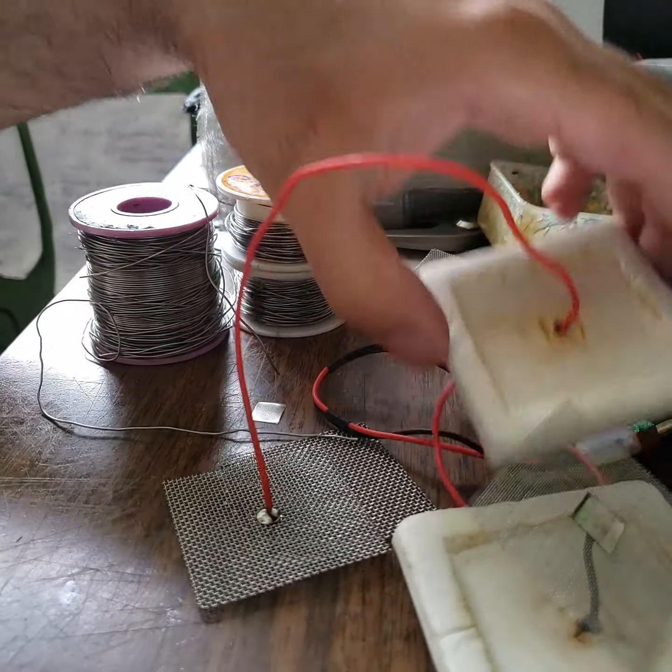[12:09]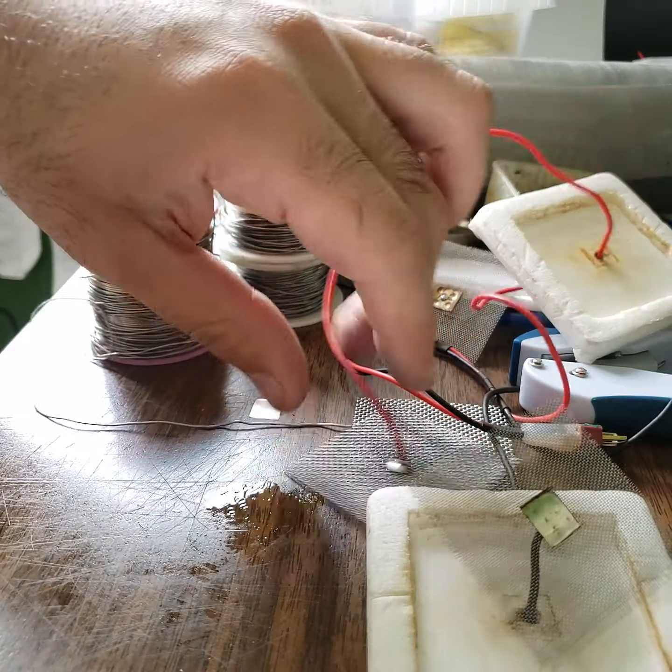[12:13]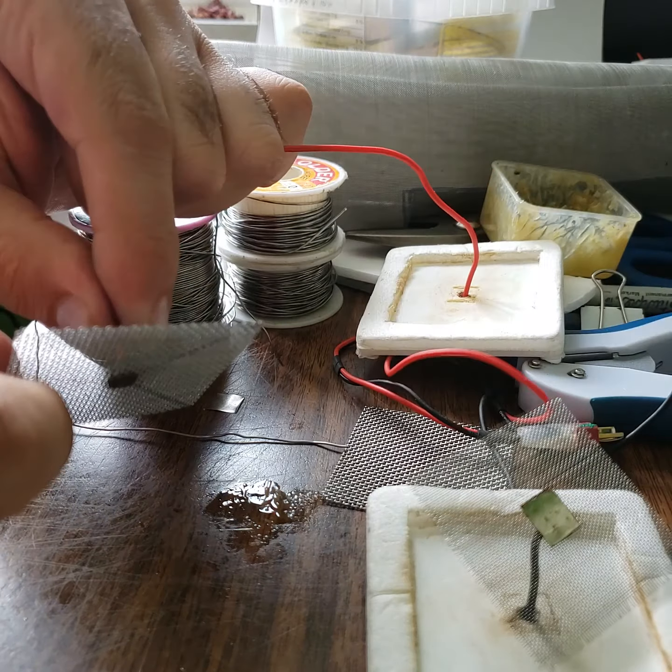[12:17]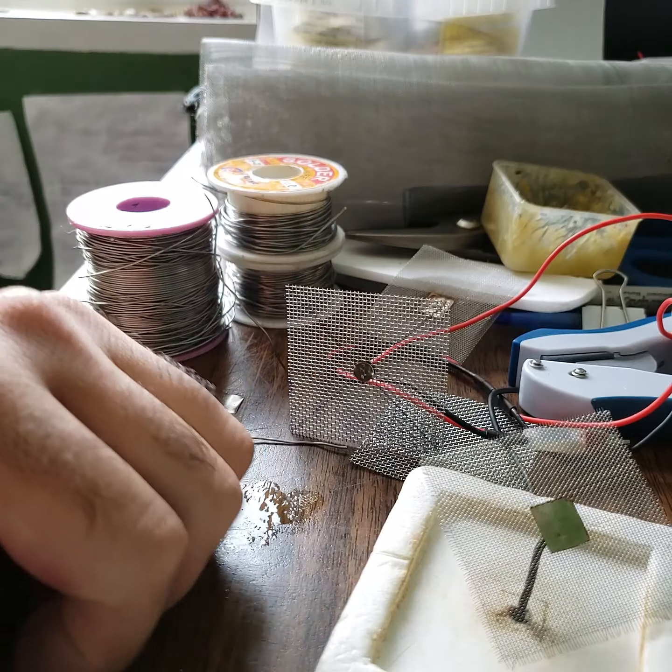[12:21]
Yeah, that's it for constructing the electrode. If you have any question about any part of my video, just feel free to send me a message.
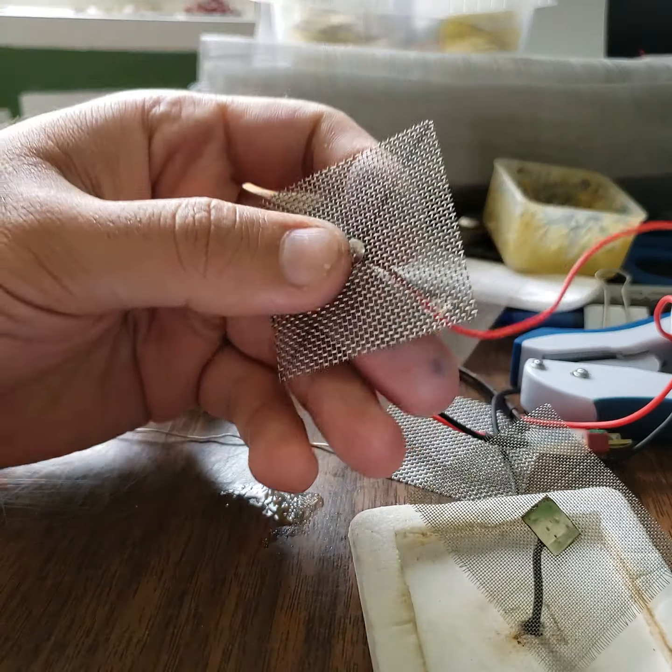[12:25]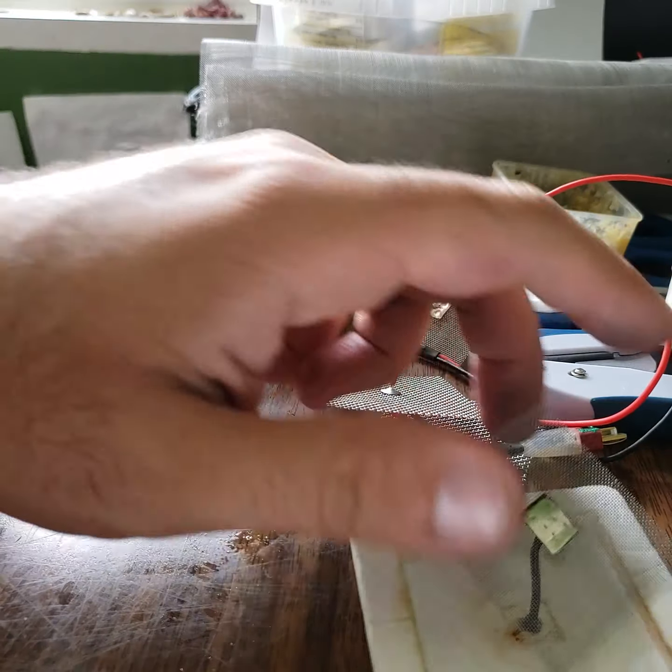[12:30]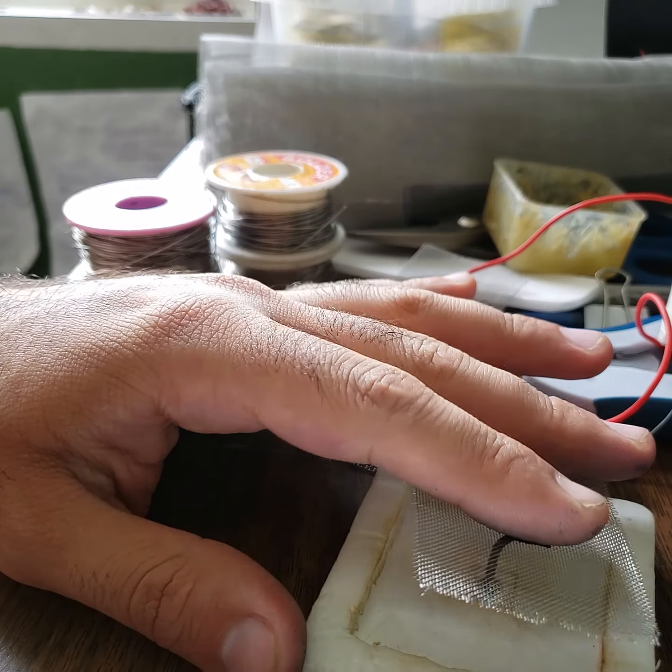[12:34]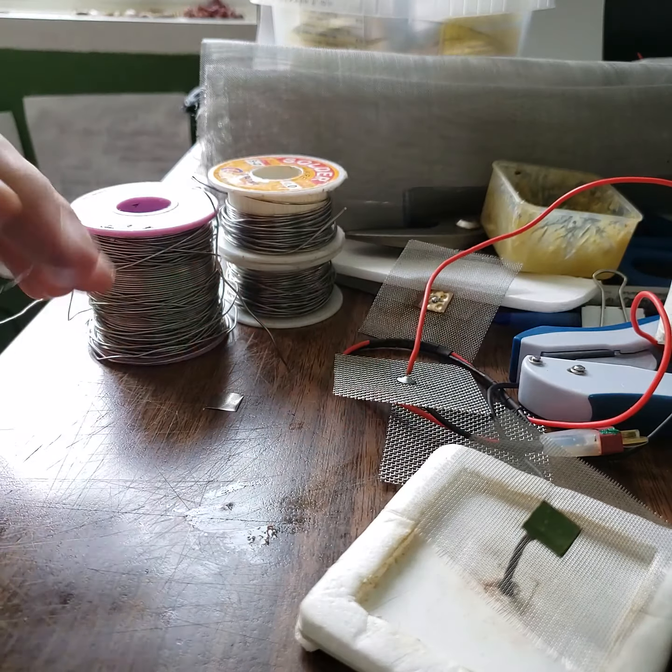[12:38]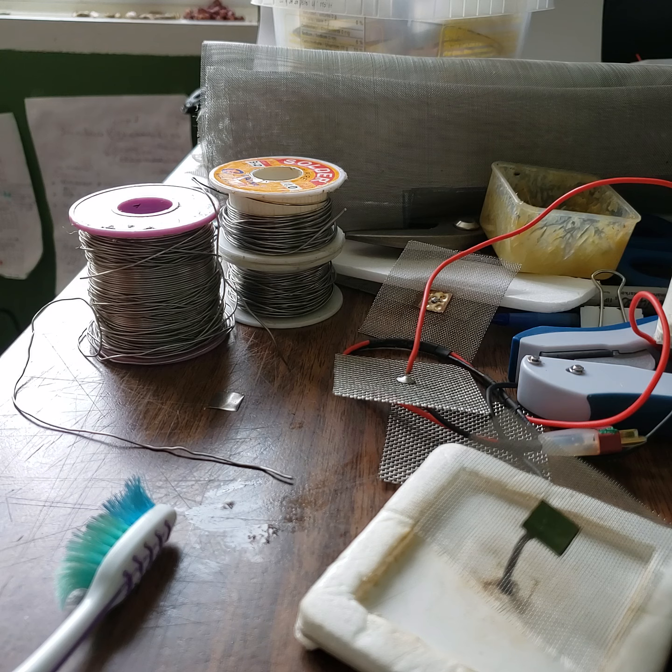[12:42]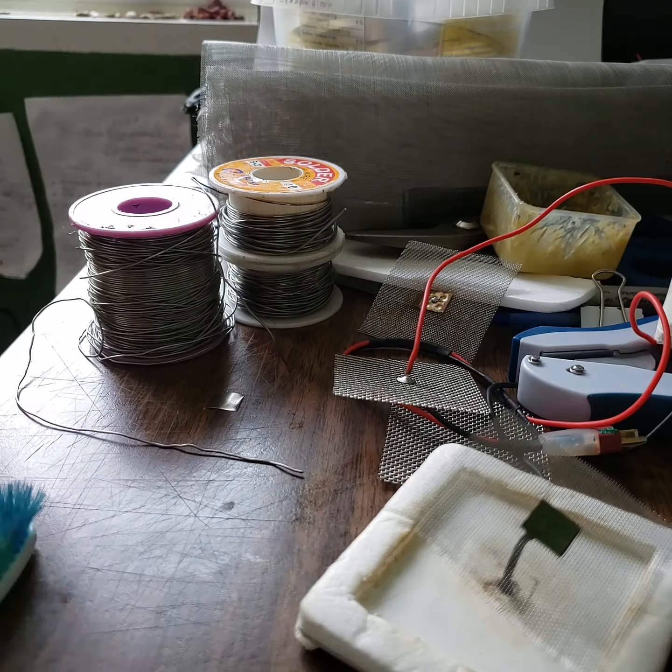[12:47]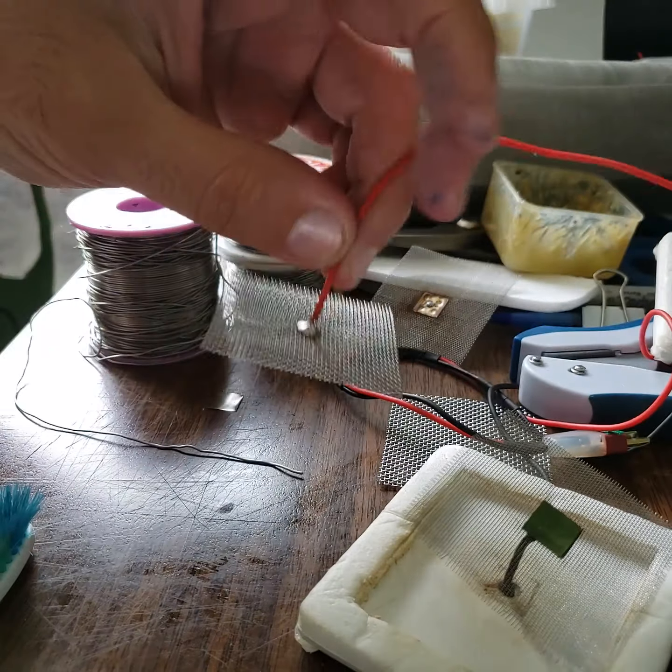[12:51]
For a spot welding machine, I already posted a video. You can easily make your own spot welding machine for at most about $30 using a microwave transformer. So you can also watch that video to make your own spot welder, because that's a part of the construction.